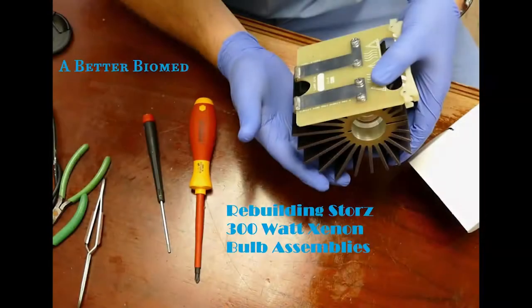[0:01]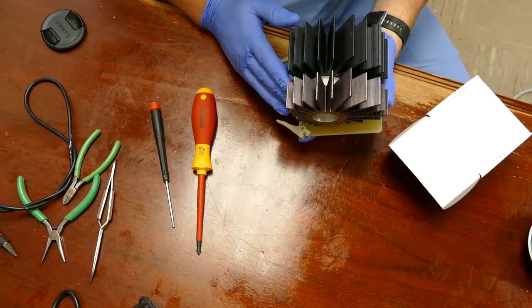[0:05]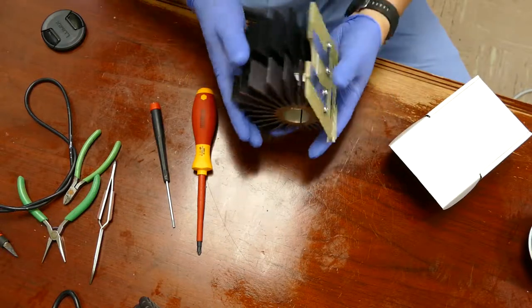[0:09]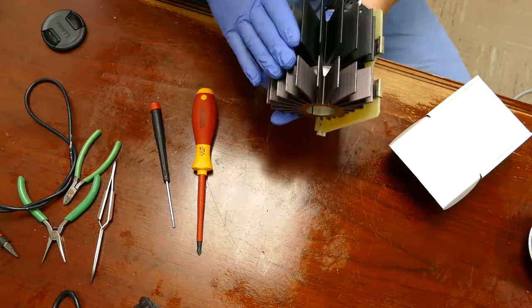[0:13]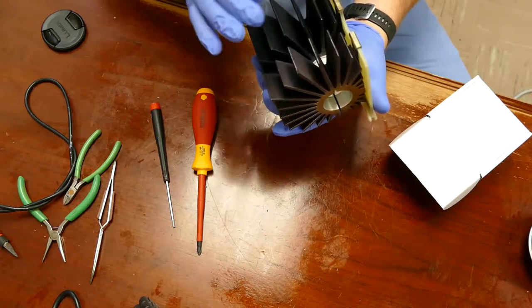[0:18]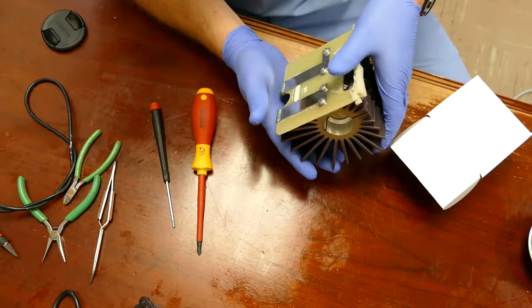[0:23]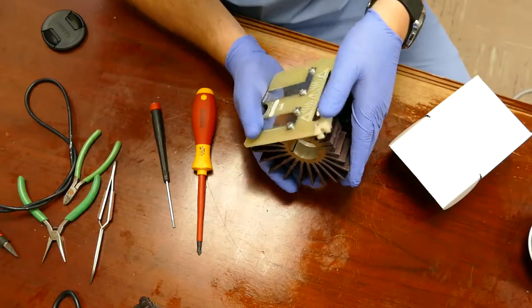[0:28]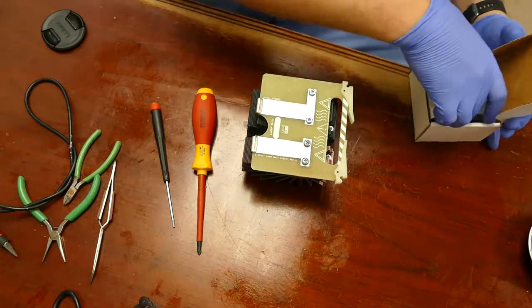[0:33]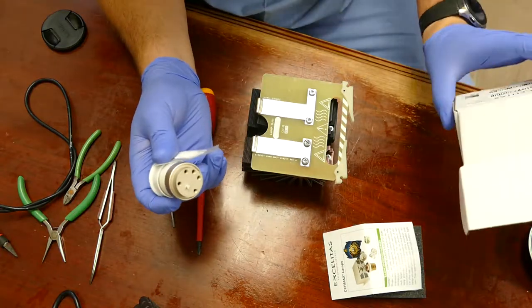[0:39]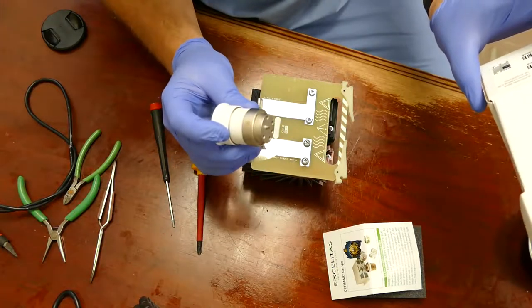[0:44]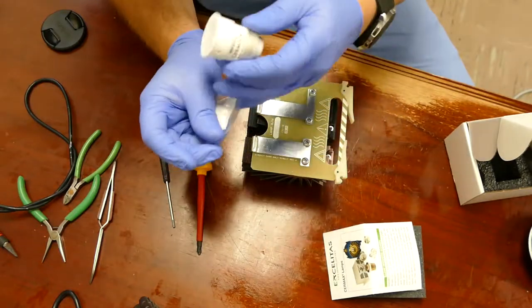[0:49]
Here you can see the bulb holder. Some hospitals tend to just ship these out to Karl Storz and buy whole replacement ones, and that's very expensive. That can be well over $1,000 if I remember right, versus just going out and buying the bulb, which you can see here, at I believe it's $220, $250. This is an Excelitas PE300 BFA bulb, and it comes with a little bit of thermal conductivity paste.
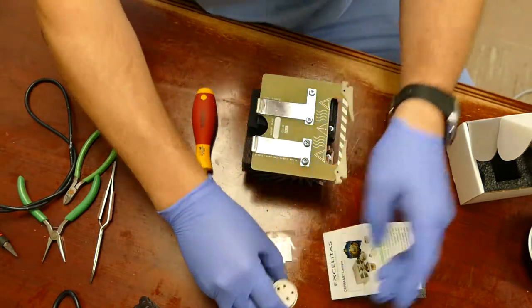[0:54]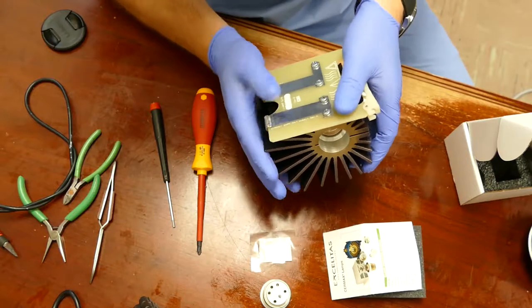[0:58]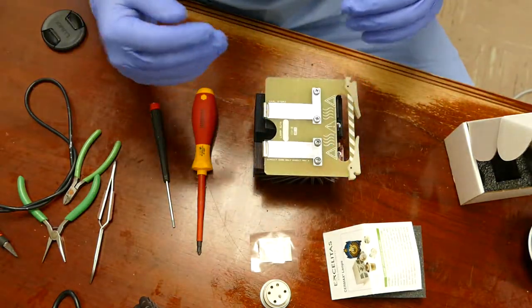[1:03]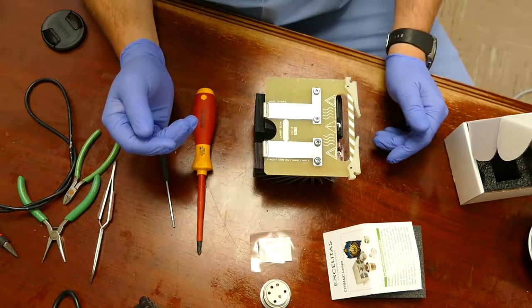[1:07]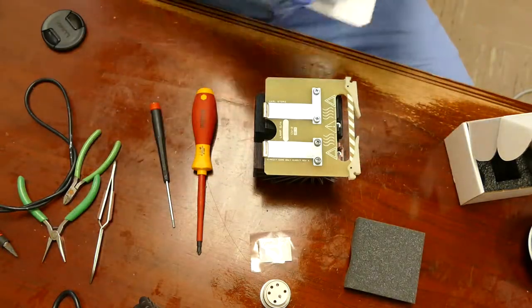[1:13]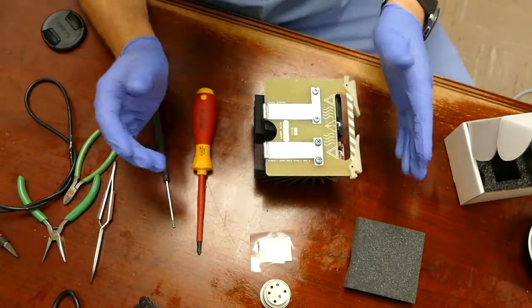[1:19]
So we rebuild them, and most hospitals I believe do, but I often see people doing them wrong or making a complete mess, and that's why I'm making this video, because I'd like to try and get the record straight on how to rebuild these bulbs. So you can see some of the support documentation for the bulb. We're just going to throw that aside because it doesn't matter.
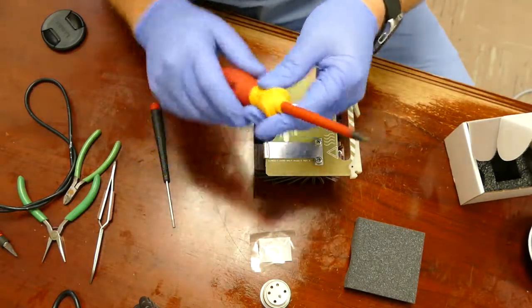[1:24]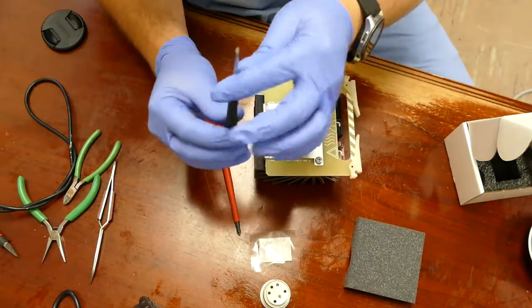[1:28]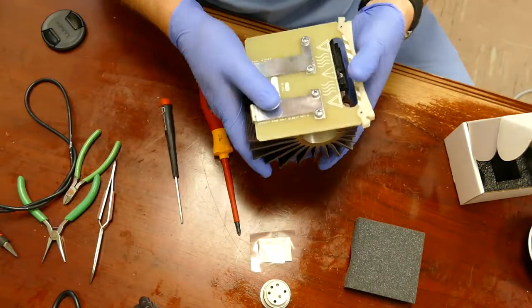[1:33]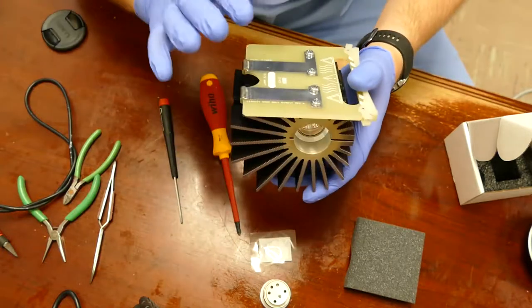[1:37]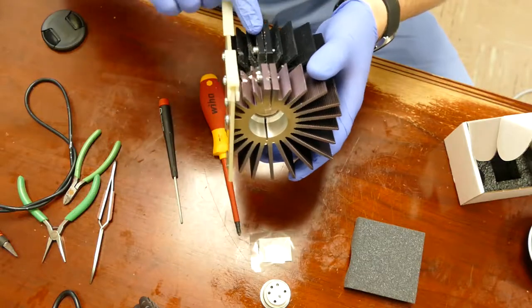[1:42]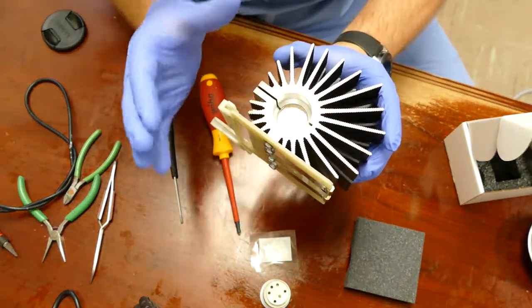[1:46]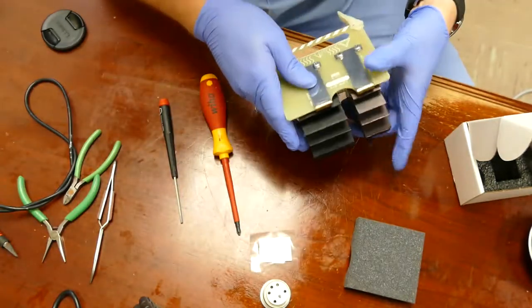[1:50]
What you will need is a Phillips number 2 screwdriver and a 7/64 Allen. There's four Phillips screws that hold the interface card to the heatsink, and then there are two Phillips screws that are the clamping force that retain the bulb. So the first thing that we're going to do is take off the card.
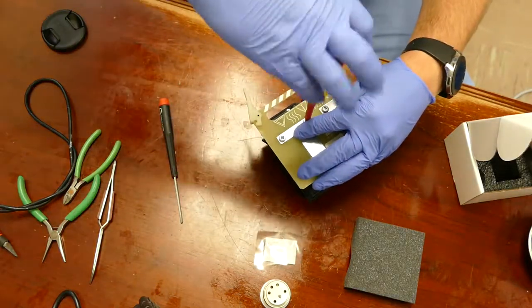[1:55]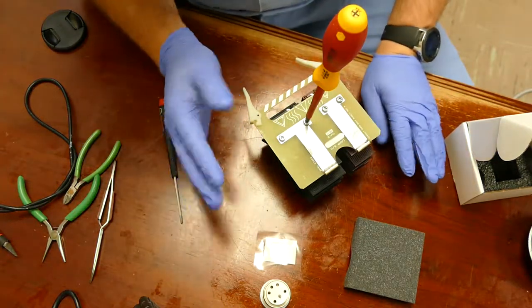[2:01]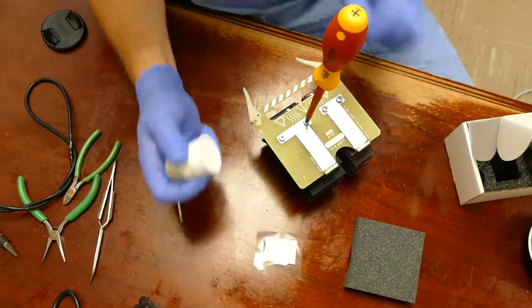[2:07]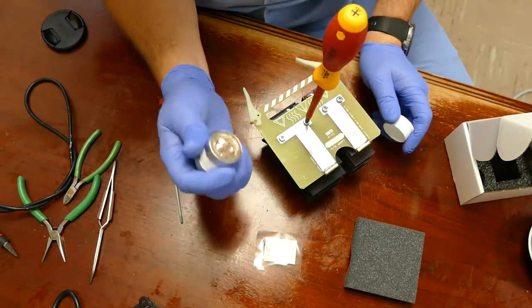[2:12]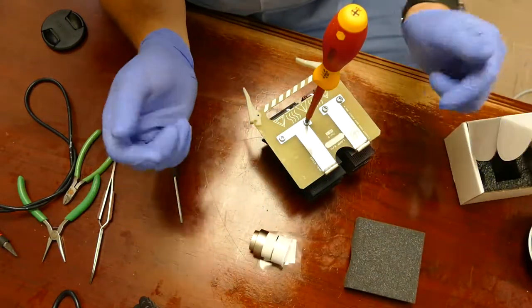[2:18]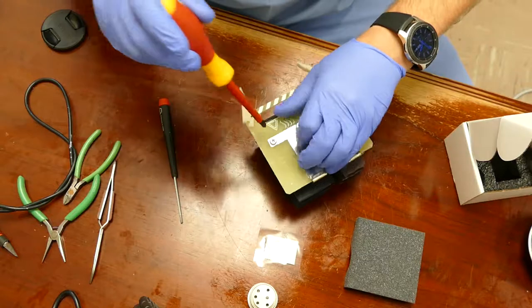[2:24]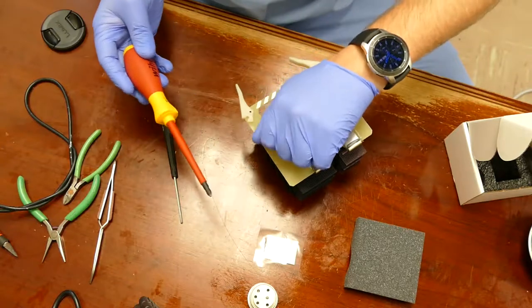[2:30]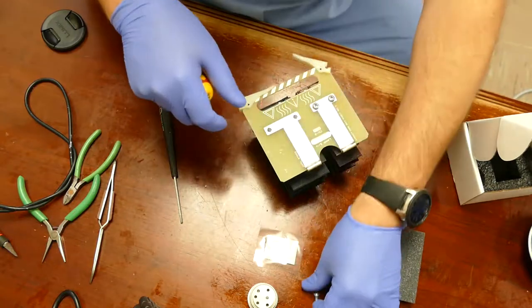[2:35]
Oh, by the way, you can see that I'm wearing gloves. Please wear gloves, not just because this is a mess and this is the easiest way to clean it up, but when you're handling bulbs, oils from the skin will destroy the face of a bulb. It'll create a hot spot. So always use nitrile gloves when you're handling bulbs. I'm going to finish taking off the card. You know I'm not using power tools. The vibrations caused by power tools can also destroy the bulb.
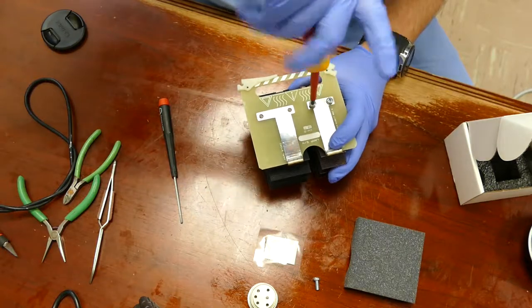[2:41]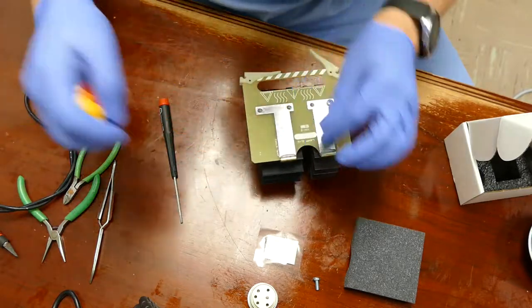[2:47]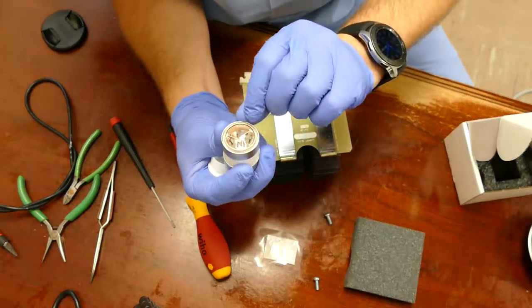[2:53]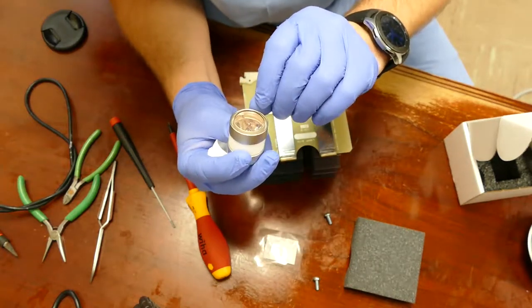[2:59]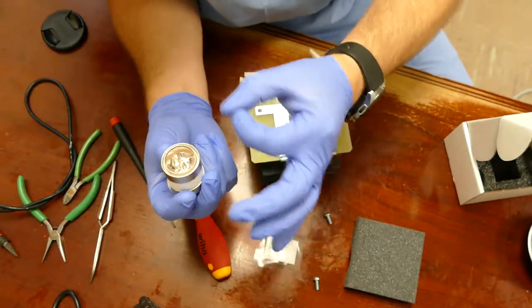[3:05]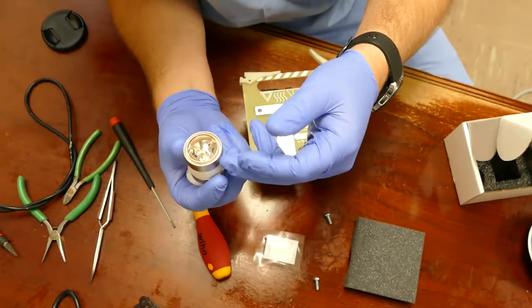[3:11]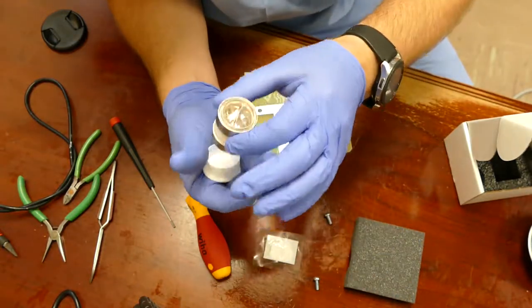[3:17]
These are arc lamps, and what that means is that there is no filament. It's an electronic arc across a pressurized gas. And you can see the anode and cathode right there. There is no visible spot on a new bulb, barely any, and that's just from testing. But on an expired bulb, as you'll see on this guy, there will be a sunspot or a burn spot, and sometimes even browning on the reflector. And the browning is where the arc is starting to arc over inside the lamp. And that's very bad. It'll basically cause the bulb to eventually self-destruct.
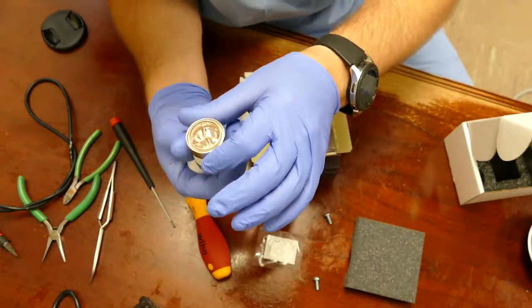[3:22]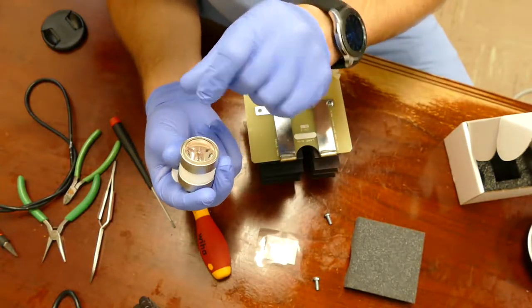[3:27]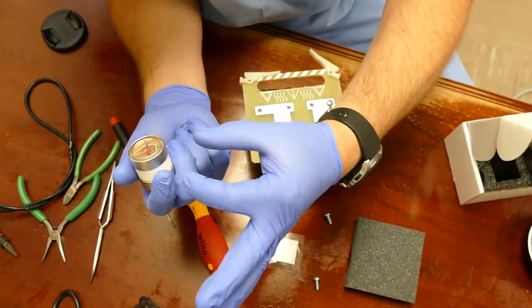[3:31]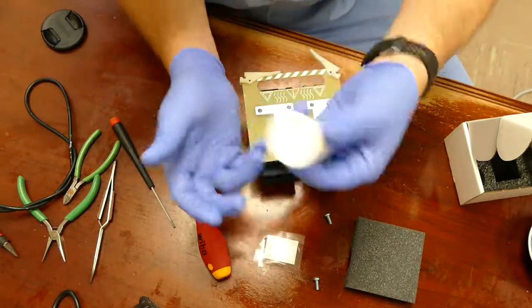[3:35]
So on a bulb, if you're looking to see if it's new or not, just take a look down at where the anode and cathode gap is, and you will see a large black spot. And that means that it's a spent bulb. It's used, at least. So here's my brand new bulb.
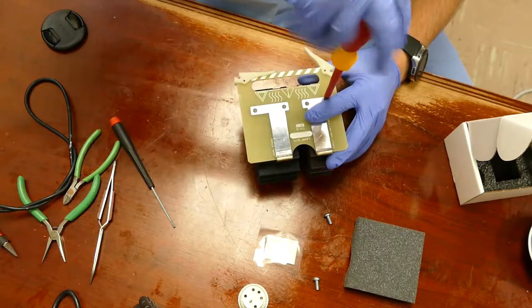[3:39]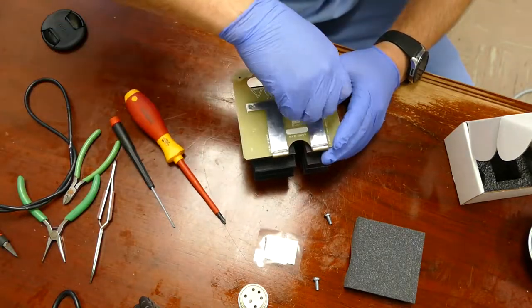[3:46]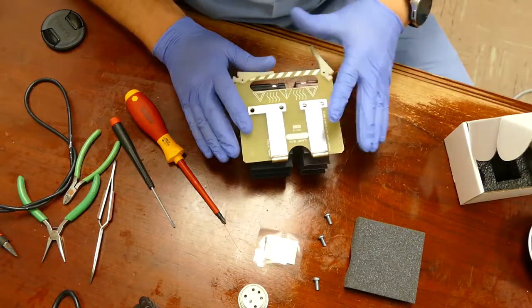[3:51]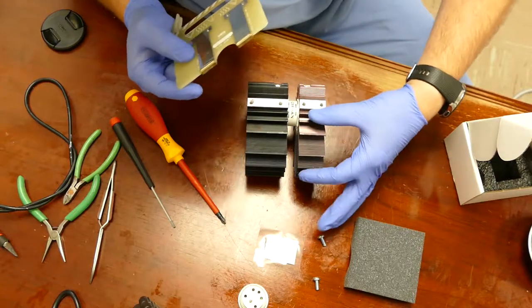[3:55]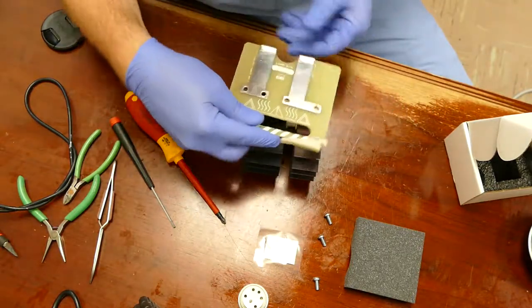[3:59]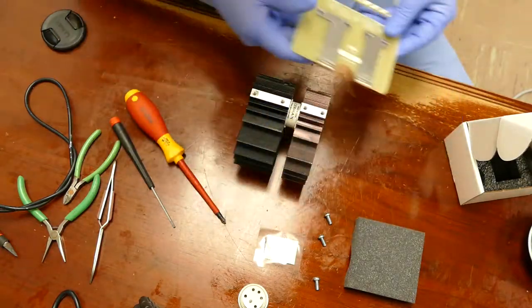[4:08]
Finish removing the card. Now, I want you to take notice that the card interface right here and right here goes over the fat portion of the heatsink, because I have seen people install this guy backwards, and it's just, don't do it. So, it goes over the fat portion of the heatsink. I'm going to take the card and put it off to the side.
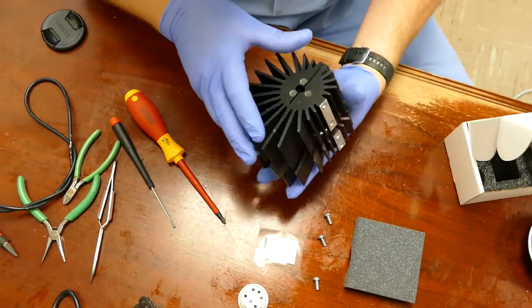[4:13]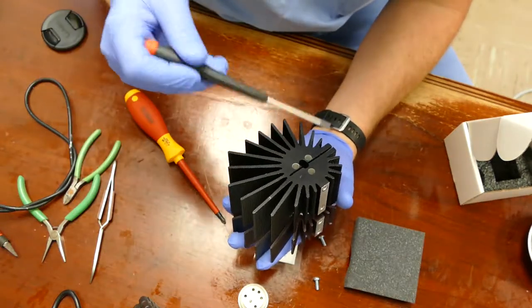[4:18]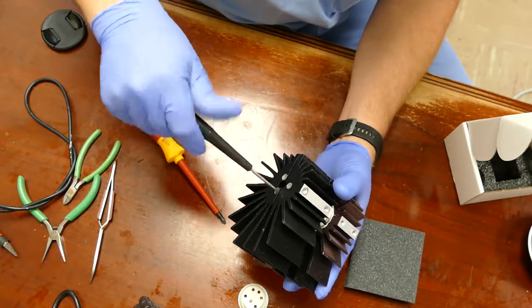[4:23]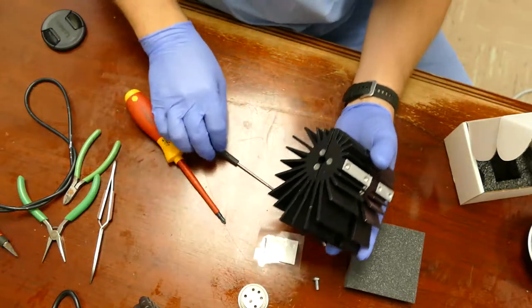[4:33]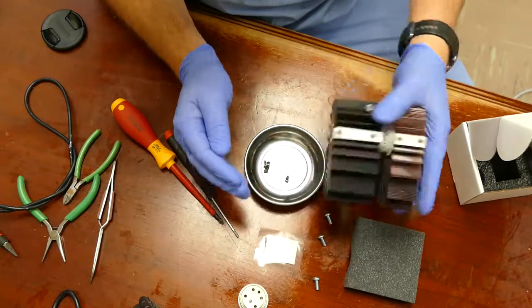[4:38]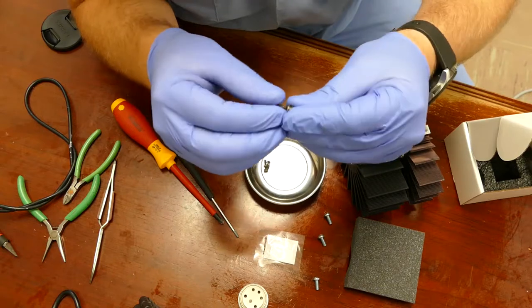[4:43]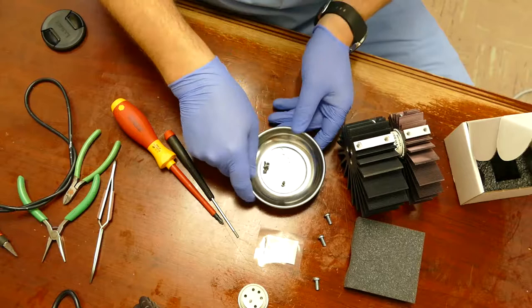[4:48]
Here you can see my two heatsinks. I've got three little screws down here, that's the 7/64. I'm going to go ahead and remove those now. And I'm going to dump those into a little tray, because as you see, there's more than just the screws in there. There's a tiny little lock ring. So you want to make sure that you retain those rings. That's why I dump them onto a dish.
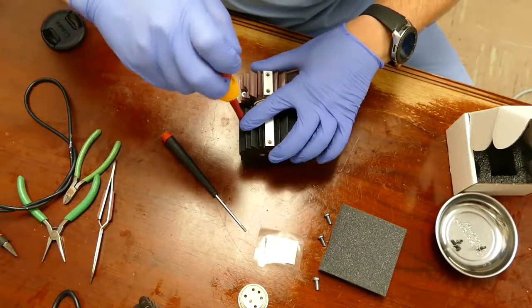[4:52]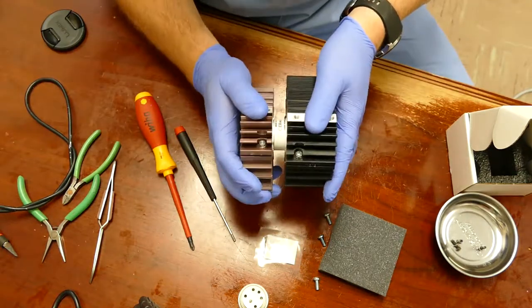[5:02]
The next thing is to loosen up the clamping screws. Here and here. And now you can just give the heat sinks a twist and it'll separate.
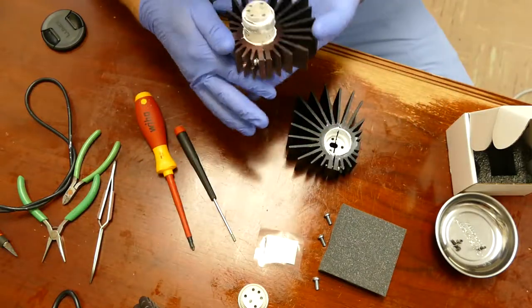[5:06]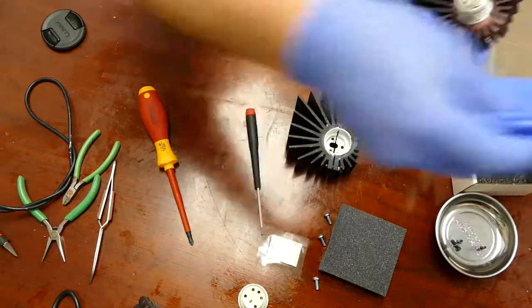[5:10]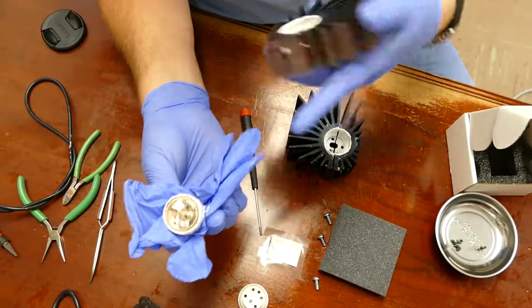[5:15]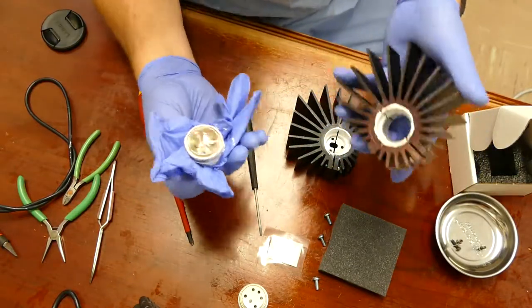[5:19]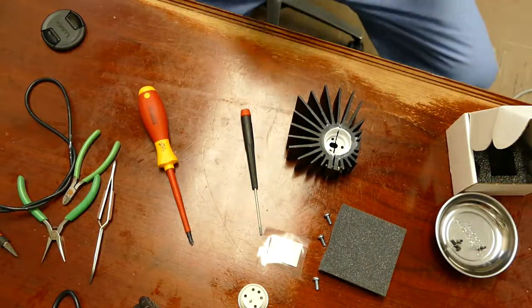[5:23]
I'm going to use my extra glove to grab onto this bulb. So here's the bulb. Beware of the white paste. It gets on everything. So that's why I'm using this glove as a disposable. And I'm just going to go and throw that bulb straight in the trash.
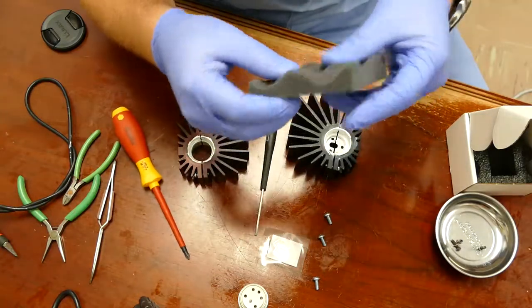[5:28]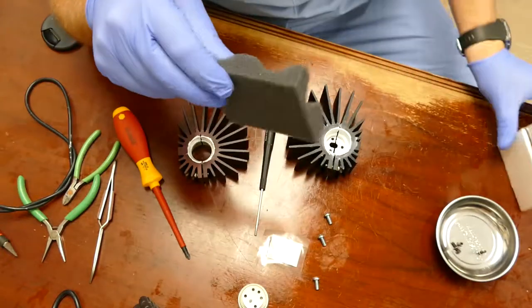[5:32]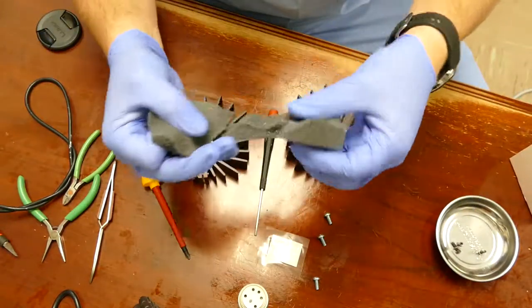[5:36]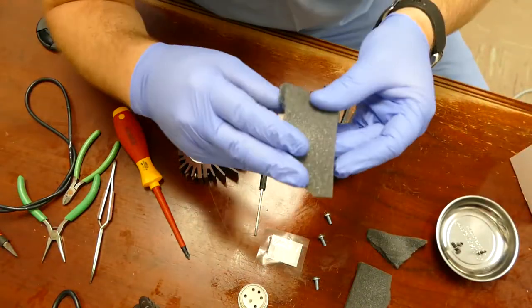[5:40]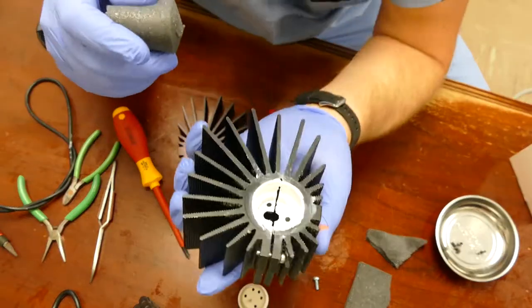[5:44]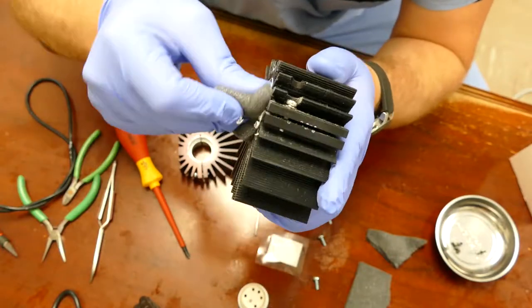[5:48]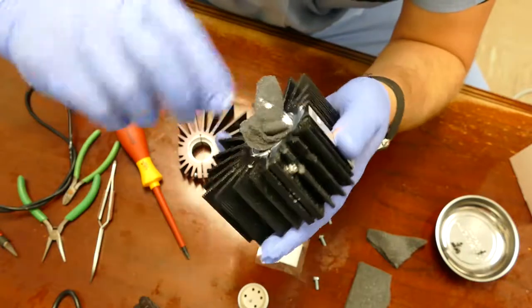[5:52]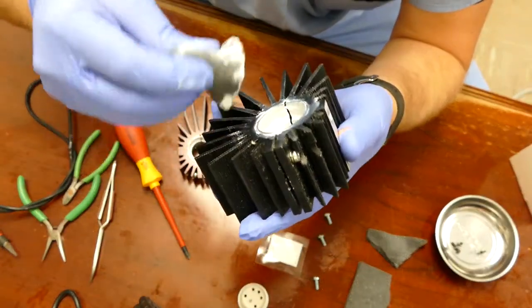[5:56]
Now the next thing you need to do is with your new bulb, there's going to be some packing foam. I want you to take that foam and rip it in two. All right? So once you have the foam ripped in pieces, you can take that foam and use it to clean out the heat sink. You can take it and stick it down in there. Give it a spin, and it will clean out all that extra paste.
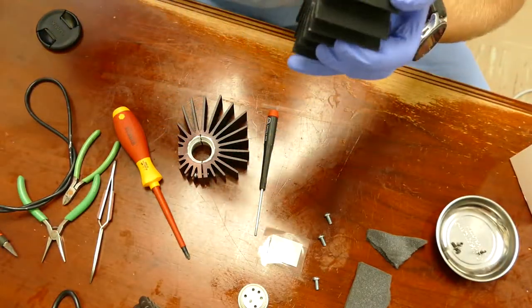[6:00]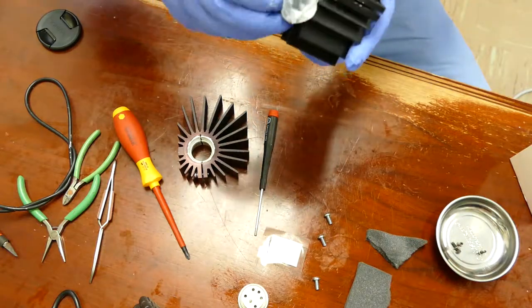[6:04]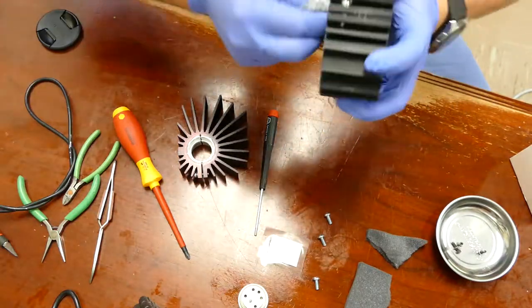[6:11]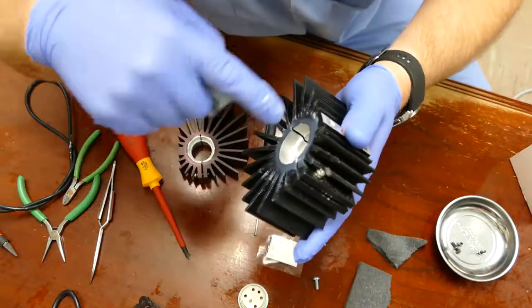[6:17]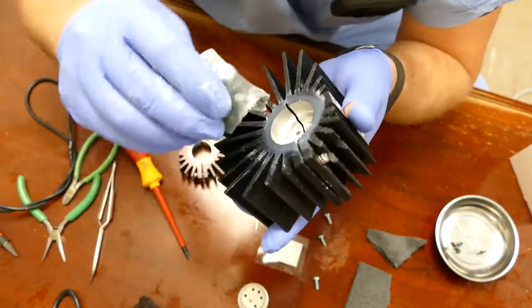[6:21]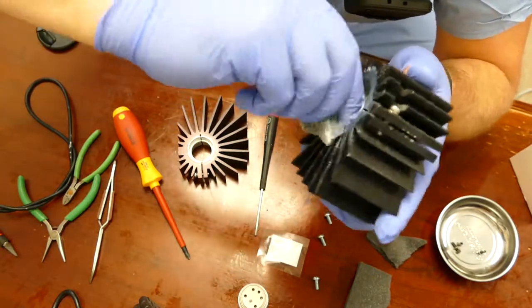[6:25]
You can tell whoever rebuilt this bulb used an abundant amount of that paste. It is everywhere. But because the foam can conform to the lands and grooves down inside this heat sink, it's an excellent source for cleaning those out. That nice clean cavity for the new bulb.
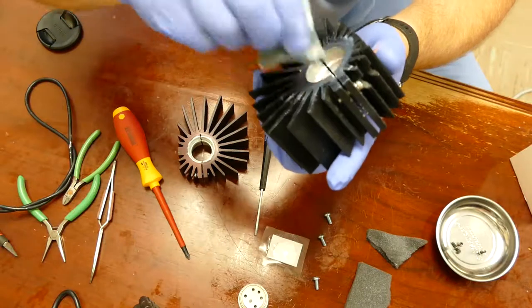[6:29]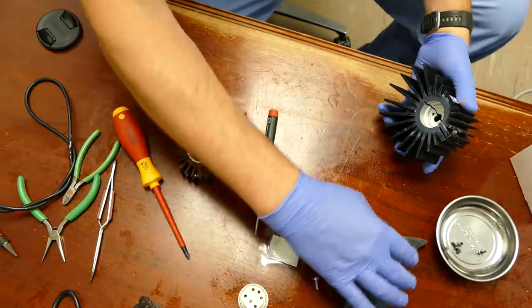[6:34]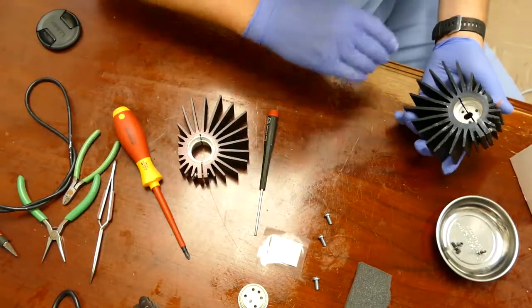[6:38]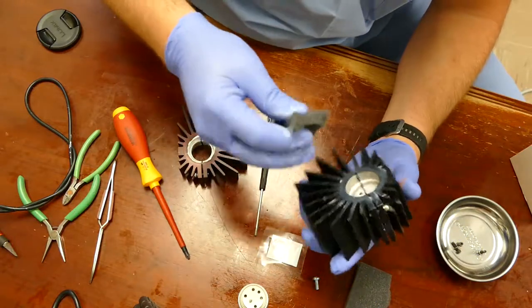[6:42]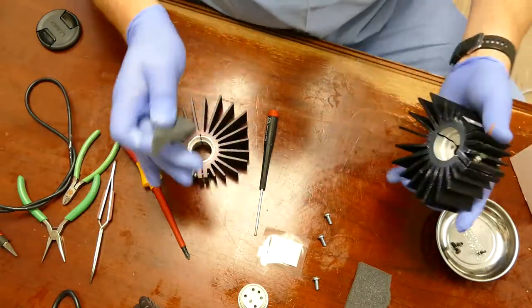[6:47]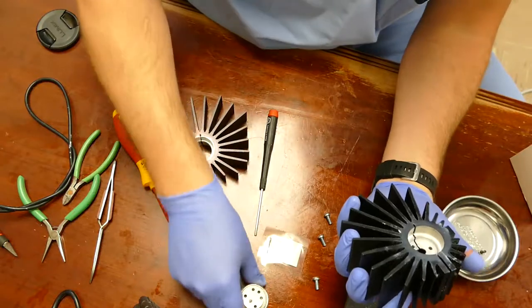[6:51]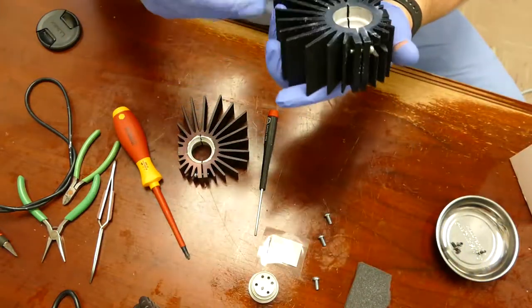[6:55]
Make sure you throw that foam away. Don't leave it on your desktop. When this white garbage gets on something, it makes an absolute mess. So try and maintain a clean work environment, because you don't want to get this stuff on the face of that bulb. These bulbs are about $220, so try and be nice to it. All right.
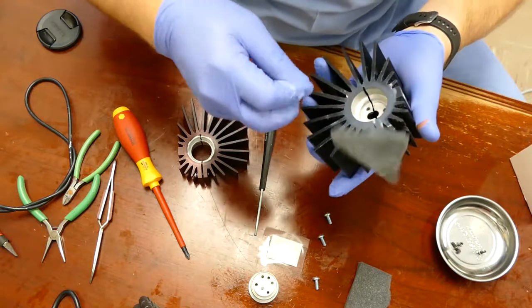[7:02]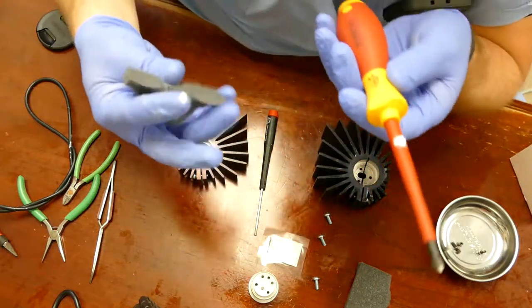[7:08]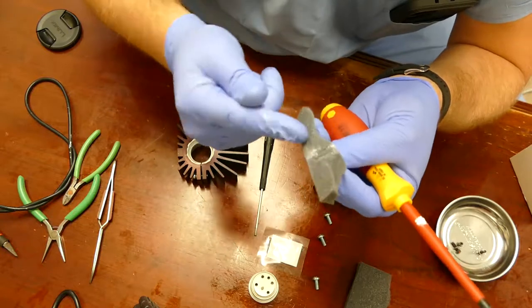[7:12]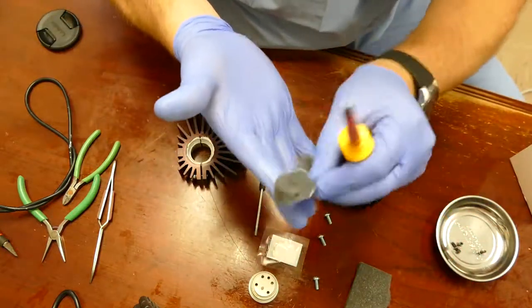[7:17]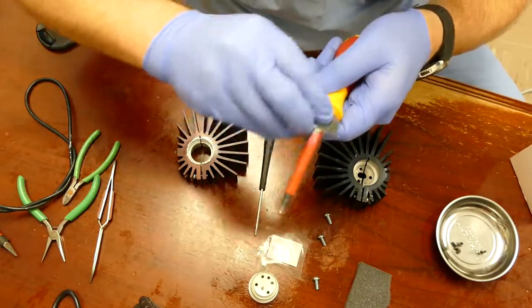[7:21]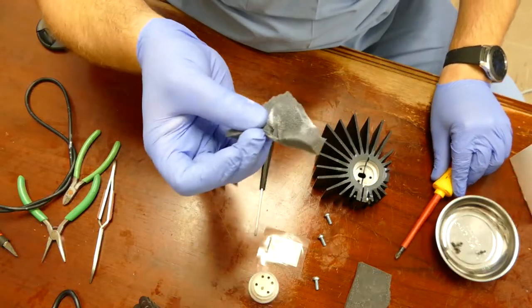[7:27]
So if you happen to get some of the white goo on some of your tools, or even on your gloves, you don't have to change out your gloves. Just take the foam and rub it on your glove. And it's like a magnet for this white goo. See that? Cleans it right up. Keeps it on the foam.
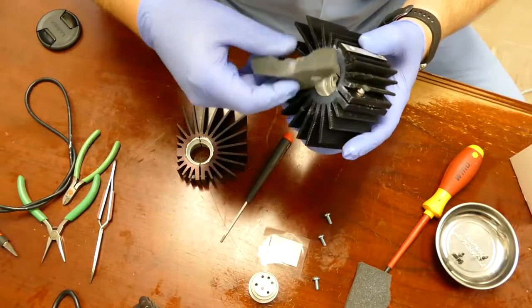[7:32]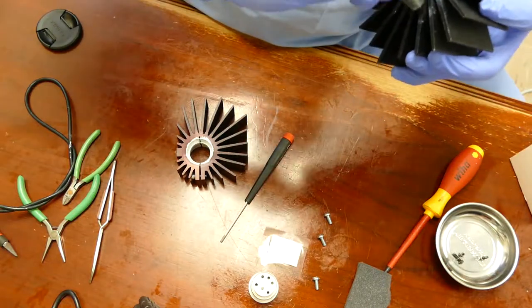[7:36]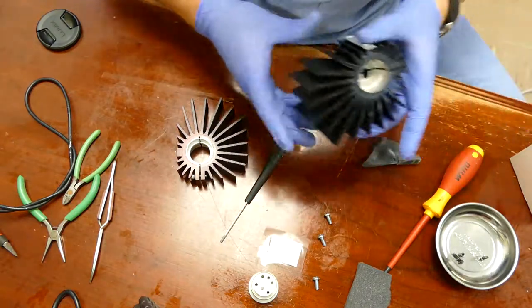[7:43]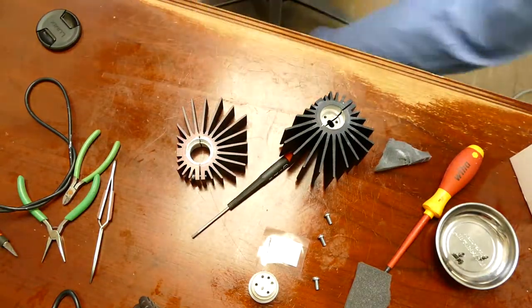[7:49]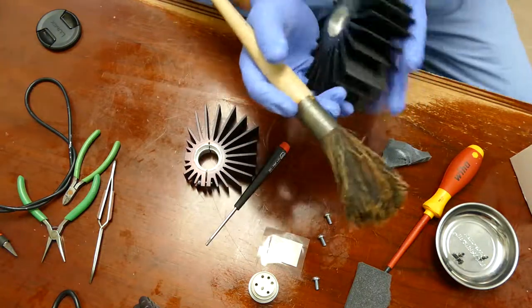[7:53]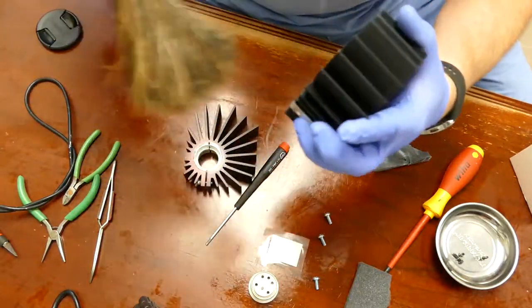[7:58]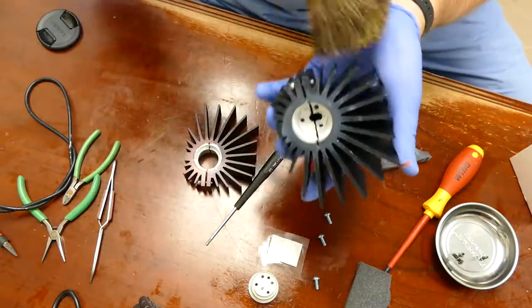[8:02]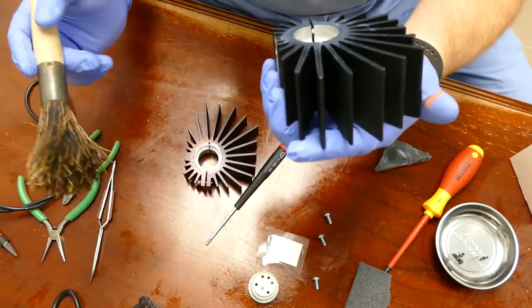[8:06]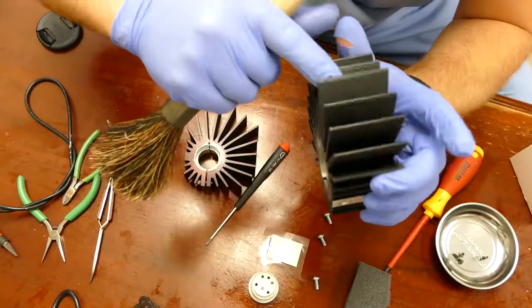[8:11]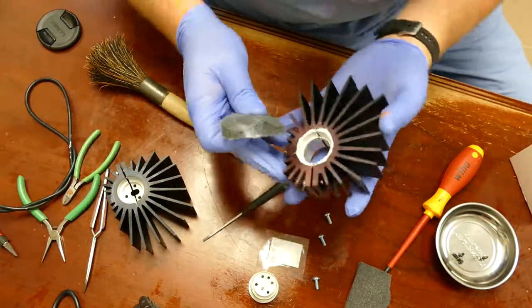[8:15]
So this housing here looks like it's pretty clean. Clean enough for what I'm doing anyway. Next, you want to take a brush if there's any sort of lint on these fins. I believe there is on mine. So I keep a brush like this one. And just brush them off. Clean those fins out. It's a lot of debris that gathers up on heat sinks. There we go, nice and clean. Okay, so the cavity's nice and clean aluminum. The outsides are clean. I'm gonna set this one off to the side and do the next one.
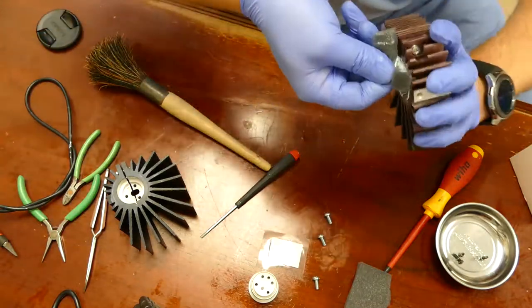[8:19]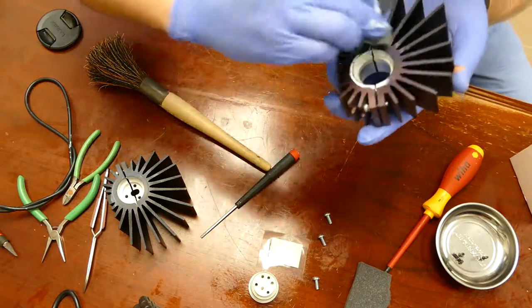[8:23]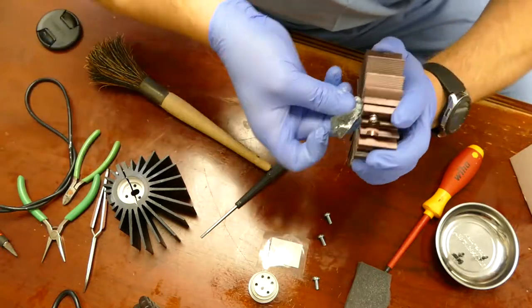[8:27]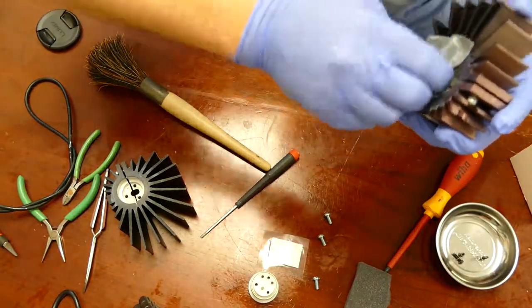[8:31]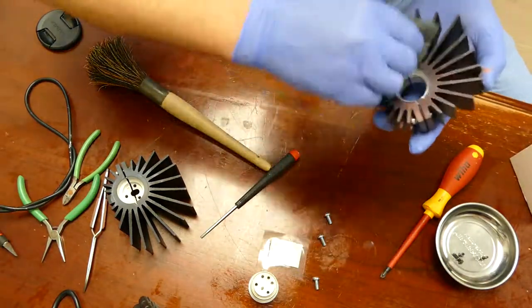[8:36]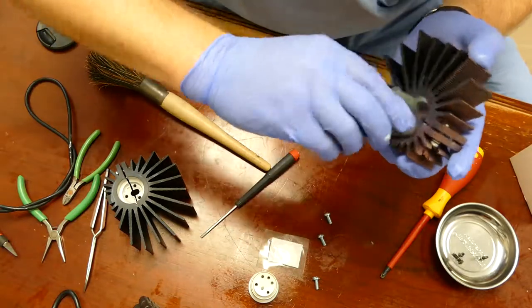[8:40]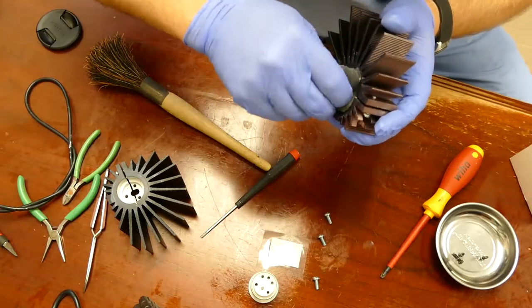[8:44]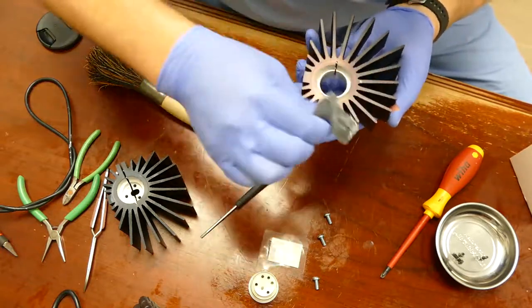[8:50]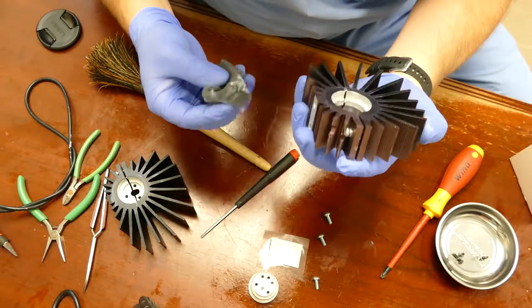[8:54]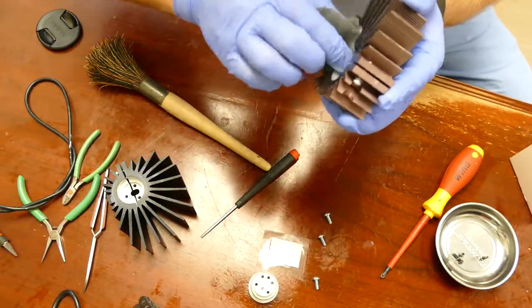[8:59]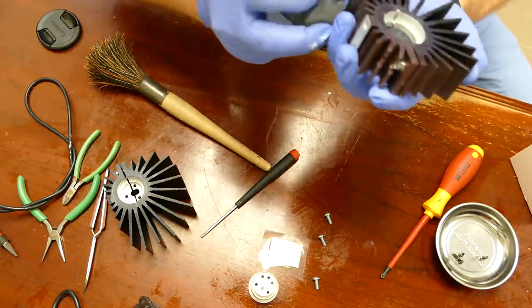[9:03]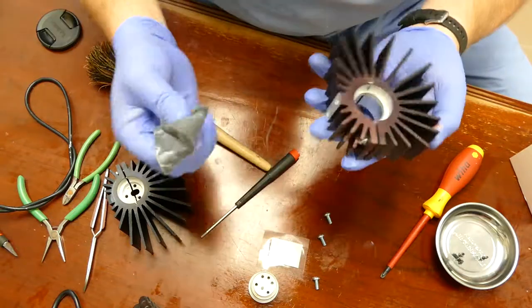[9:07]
You can see how well that foam just cleans up all that thermal compound. It does a really nice job. Nice, smooth, even swipes. You'll clean it right out. There you go. Okay, there we go. You can see that this one's clean as well. Oop, got a little bit more down on this side. Gotta check it very thoroughly. Okay. All right, that's clean.
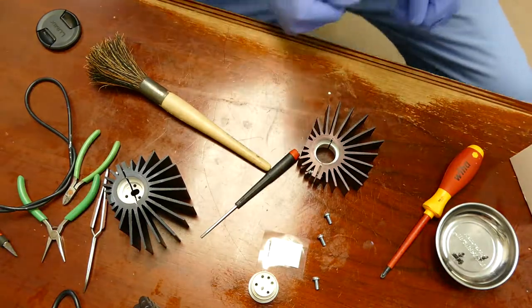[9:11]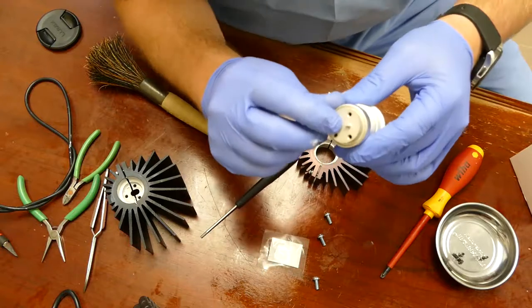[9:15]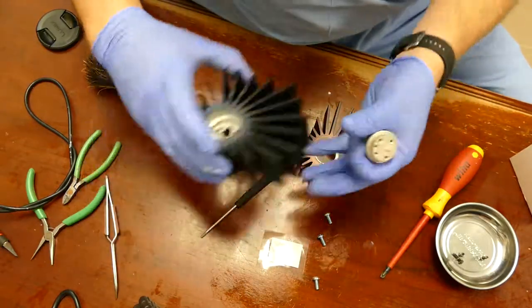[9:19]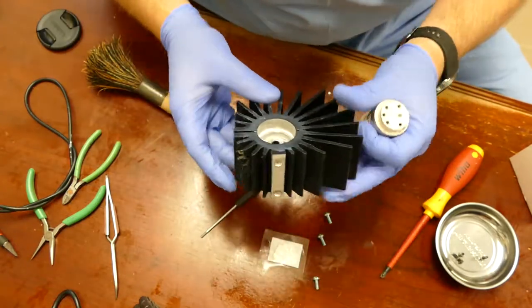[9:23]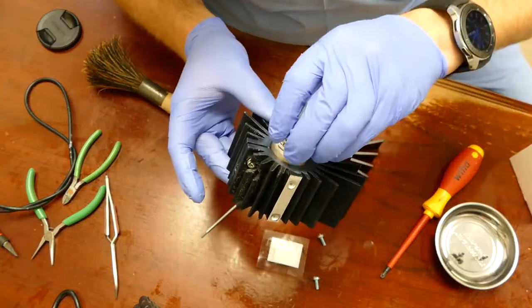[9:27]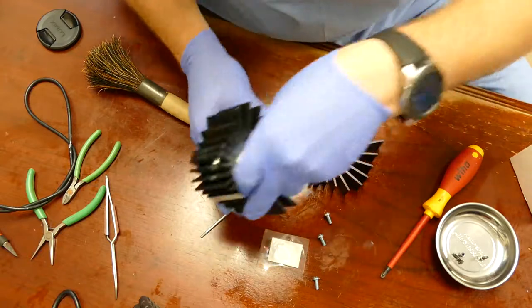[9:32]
All right, next we're gonna take the bulb, and there's a little nodule, that's where they actually pressurize it with the air. And that is gonna correlate with the gap that's in the back of the heatsink. So you're gonna align it so that nodule is in the bottom. Guesstimate where its alignment's gonna be. I'm gonna lay it right here.
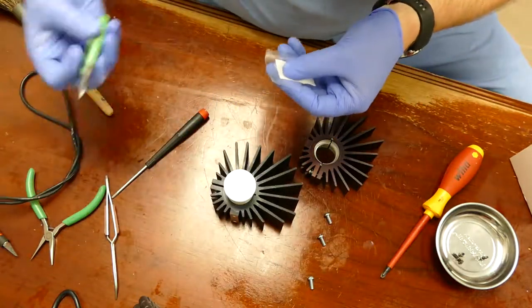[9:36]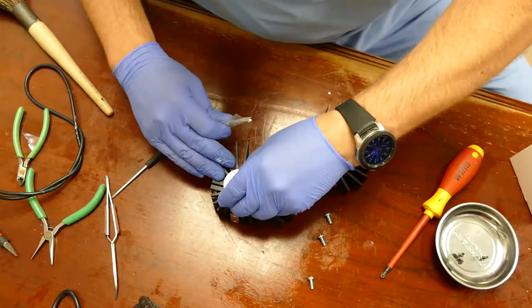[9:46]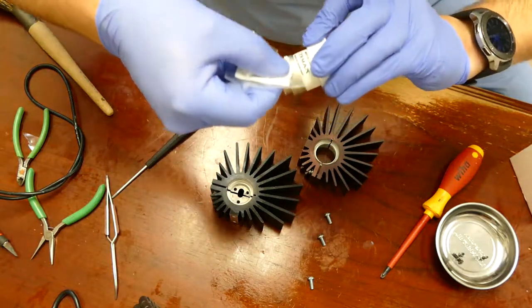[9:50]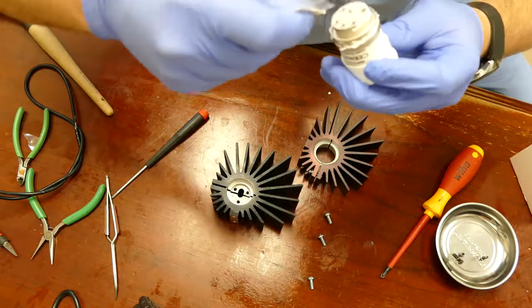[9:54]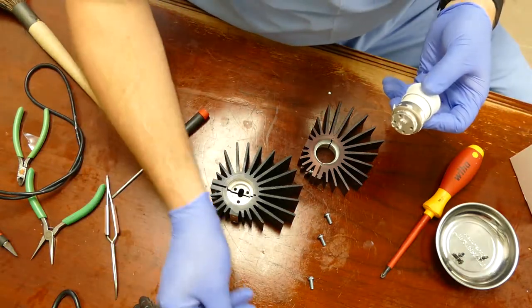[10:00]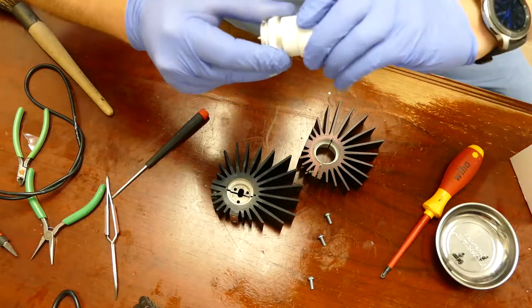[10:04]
Okay. I just opened up the corner on this thermal compound, so a little bit's coming out. All right, I'm gonna put a couple dabs of this thermal compound around the bottom and on the sides. And here's the secret. Is you take your gloved hand and just spin the bulb, and it creates a nice, uniform, even layer of thermal compound.
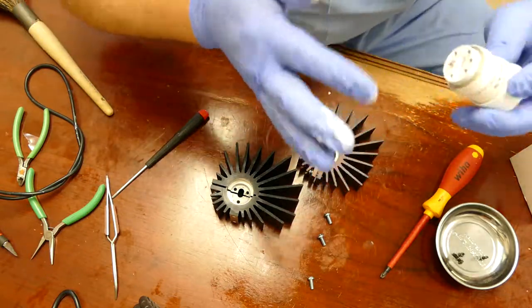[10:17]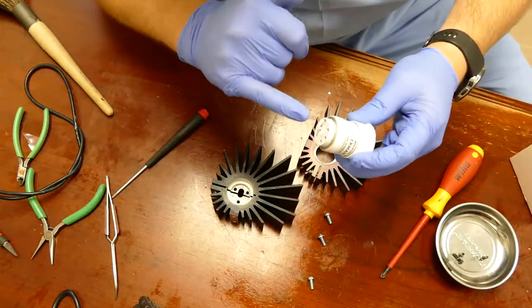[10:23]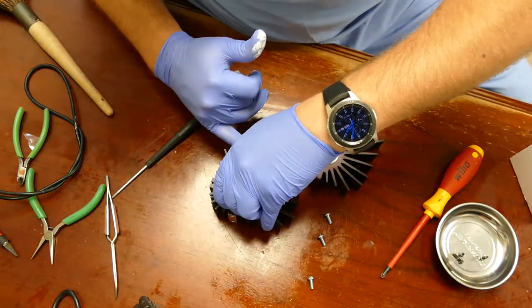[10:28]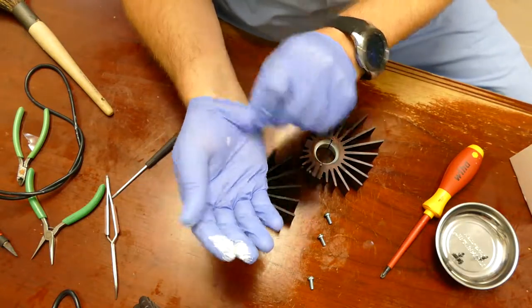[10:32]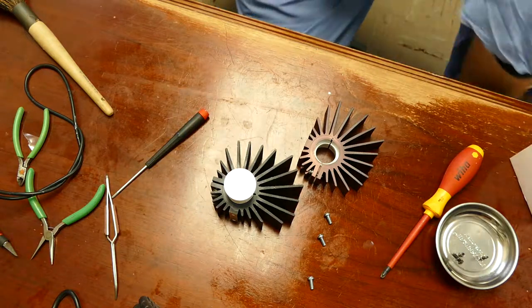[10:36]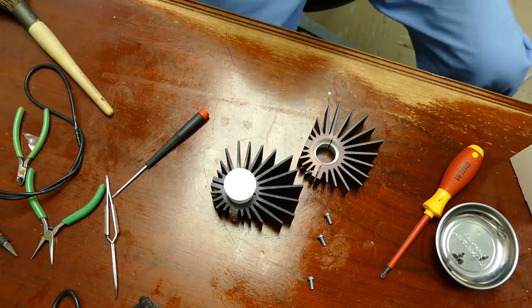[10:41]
You're not making a mess. See that? Because all you're trying to do with the thermal compound is create an interface between two materials. So there we go. Nice uniform coating. Make sure that the nodule is aligned properly. Put it in its heat sink. Now you can tell I got a dirty glove, so I'm going to pop that one off, because you don't want to touch the bulb after you dirtied up one of your gloves. And I'm going to install a new glove.
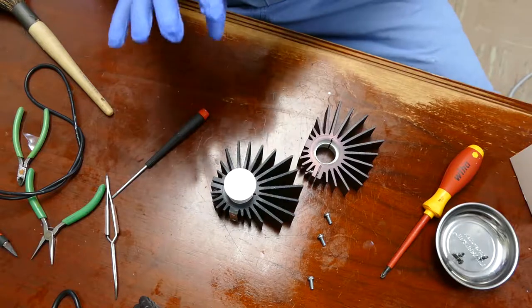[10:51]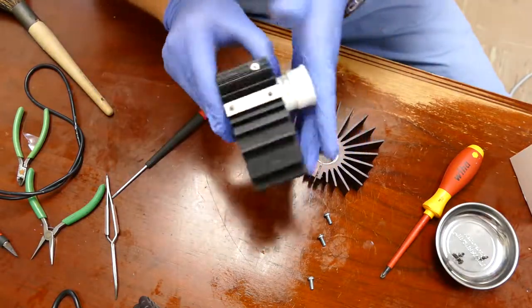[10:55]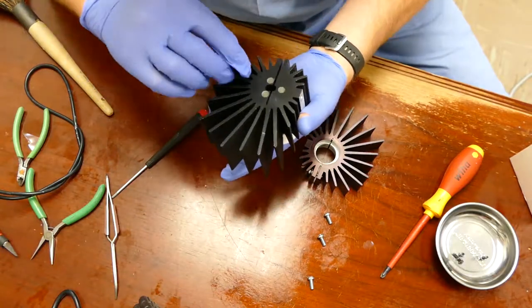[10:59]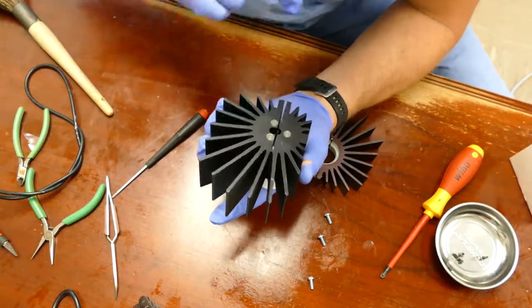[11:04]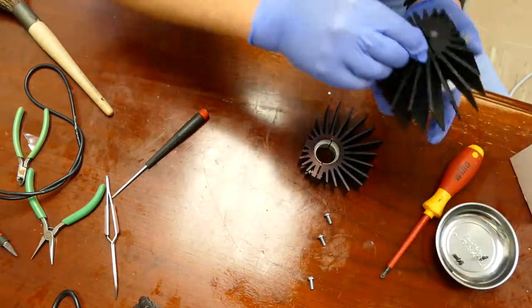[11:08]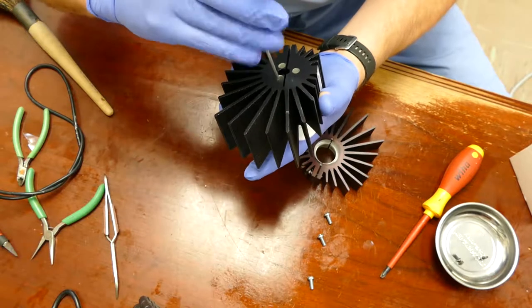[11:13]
Okay. I'm going to flip the heatsink over, rotate the bulb just enough, and you can see how on one side we have two screws and the other side we have one. I'm going to first put in the two screws on the one side. There we go.
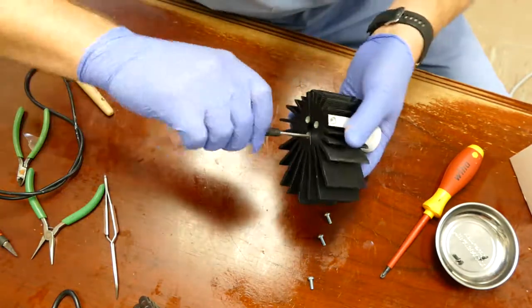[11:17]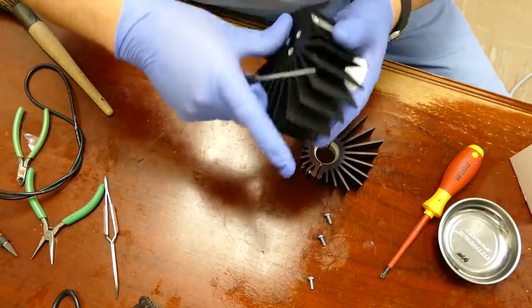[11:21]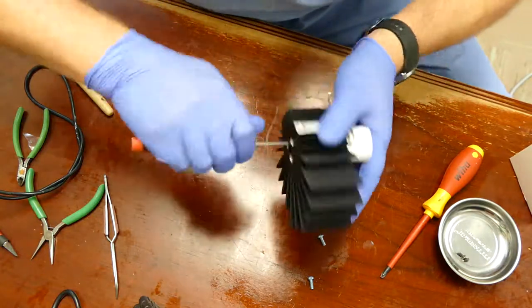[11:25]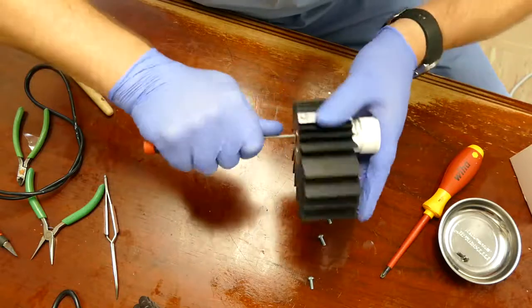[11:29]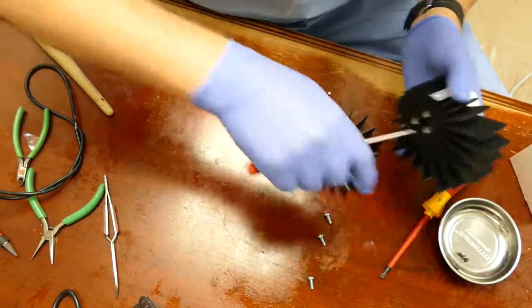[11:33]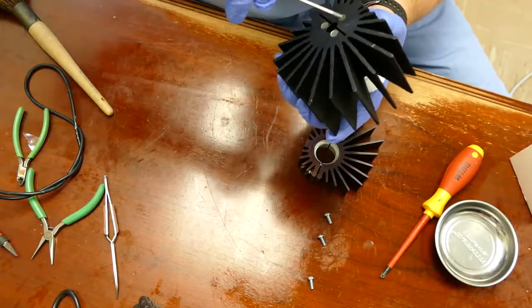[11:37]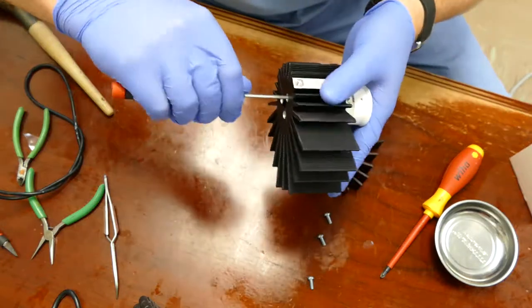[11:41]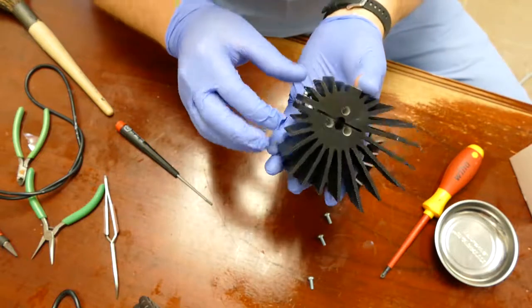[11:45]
Make sure you don't cross thread them. Make sure they go in nice and firm. Okay. And on the third side, I'm just going to get the thread started. I'm not going to tighten it down. I'm just going to get them started. And the reason you don't want to tighten it down is because you're going to clamp these two together.
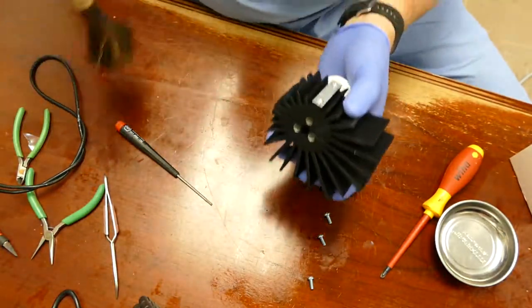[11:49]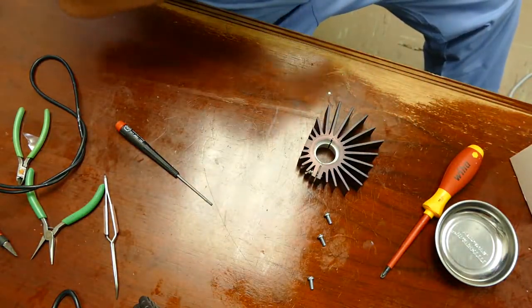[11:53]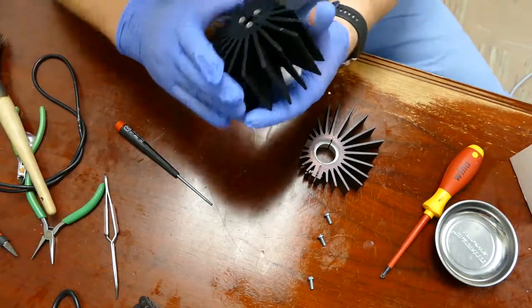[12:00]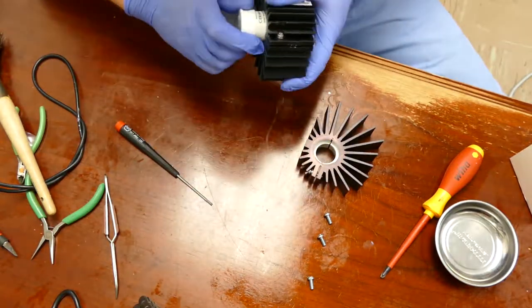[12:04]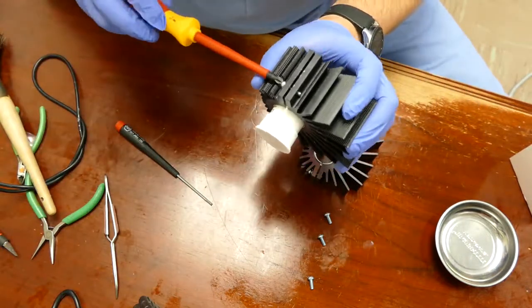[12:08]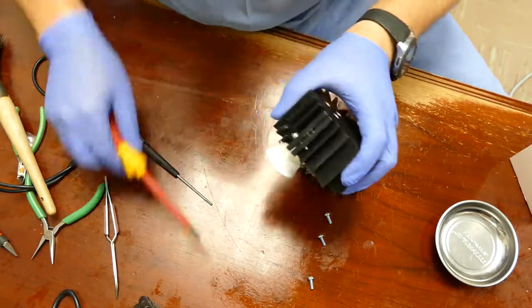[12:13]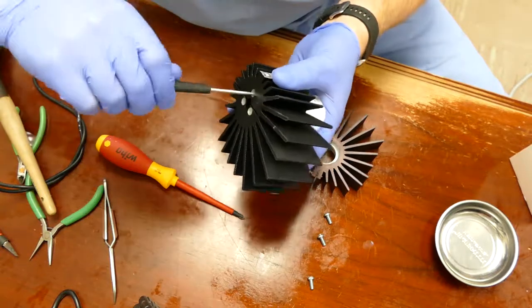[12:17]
Oh, look at that. Got a dirty heat sink there. And clean this one off. Okay. Clean, good. All right. So on this side here, I'm going to tighten down the clamping screw on the first side. There we go. Now I go back and tighten down the third 7/16 screw.
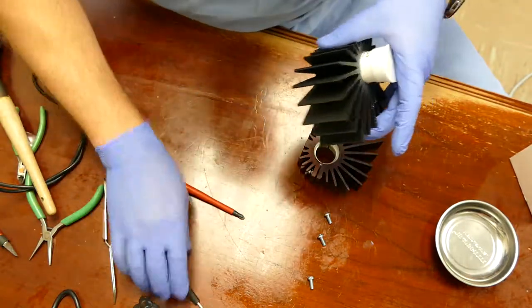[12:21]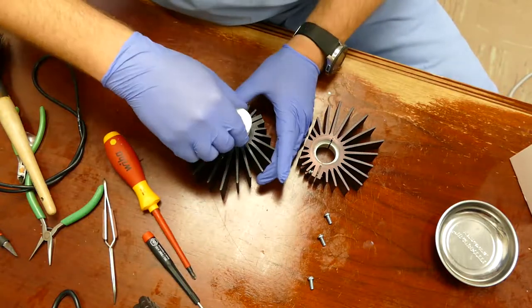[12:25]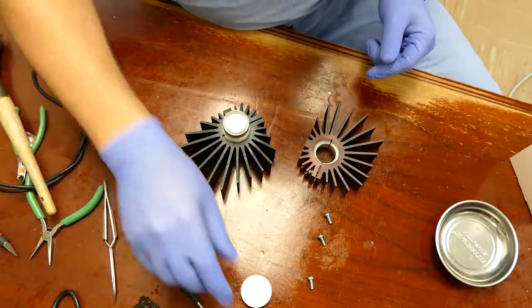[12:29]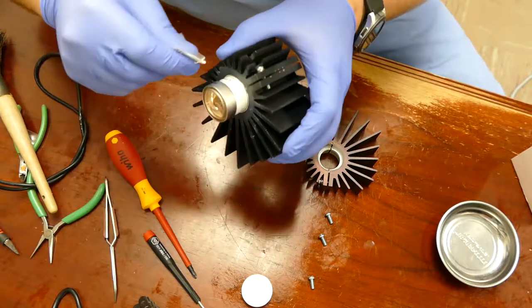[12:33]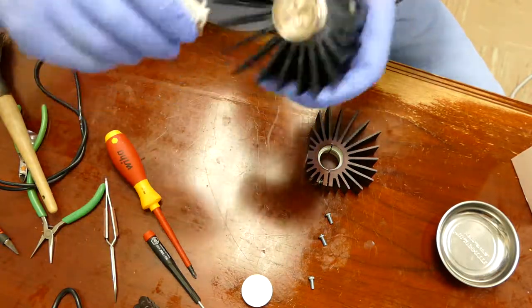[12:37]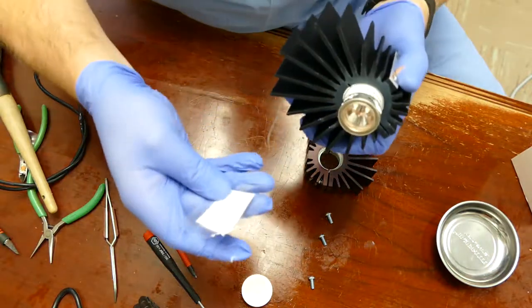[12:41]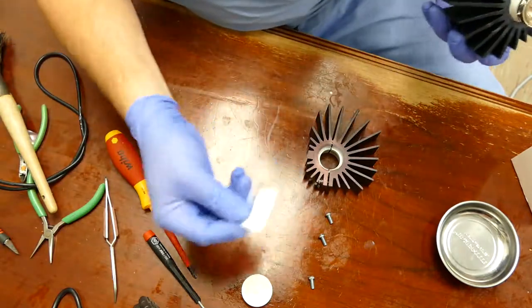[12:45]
There we go. Okay, now that the bulb is in, it's aligned, we're going to take off the cover that's protecting the face of the bulb, and we're going to take a little tiny bit of this thermal compound. Put a couple dabs around the outside. You don't have to use the whole packet. Matter of fact, I only use about a quarter of the packet. Some people just go nuts with this stuff and it doesn't make any sense.
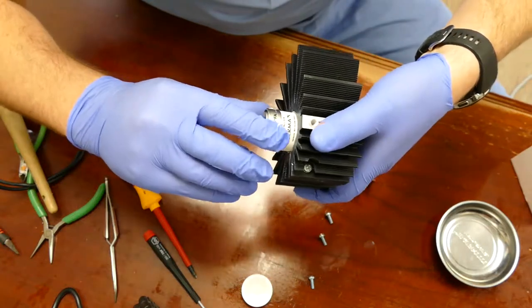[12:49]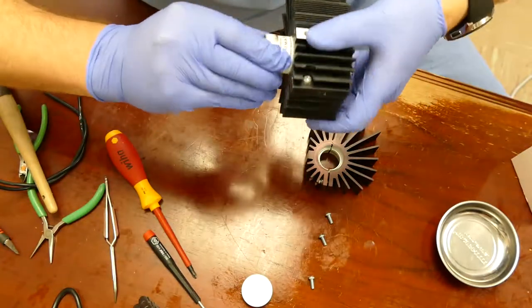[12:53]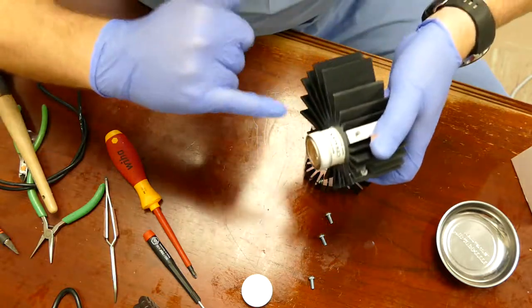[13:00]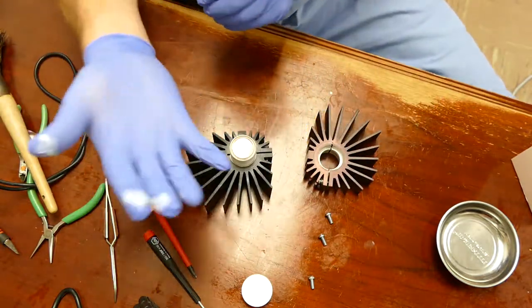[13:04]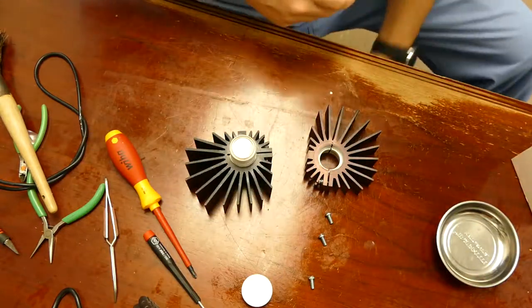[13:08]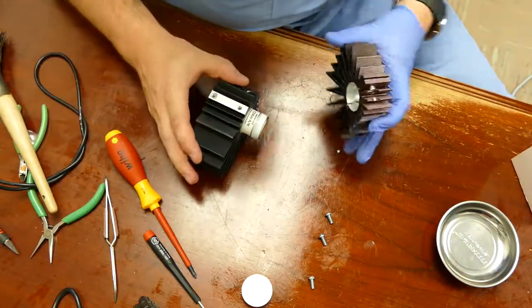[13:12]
So very carefully, what you're going to do is just grip the bulb like you did before and just give it a spin back and forth, creating a uniform coating of thermal compound. And you can see I've got a dirty glove, so I'm going to take that glove off. And now I'm going to align the two heat sinks.
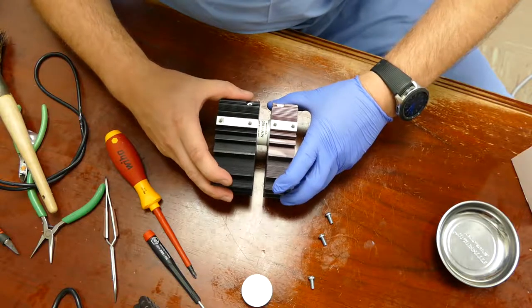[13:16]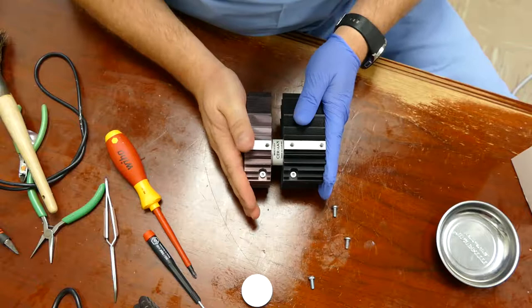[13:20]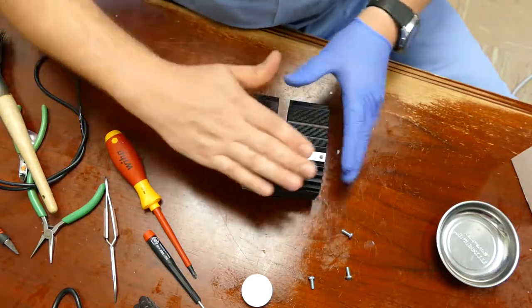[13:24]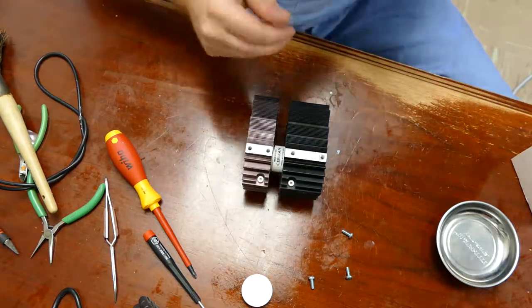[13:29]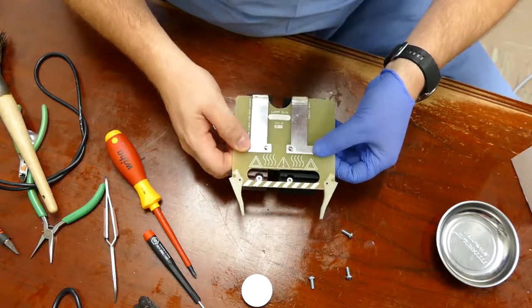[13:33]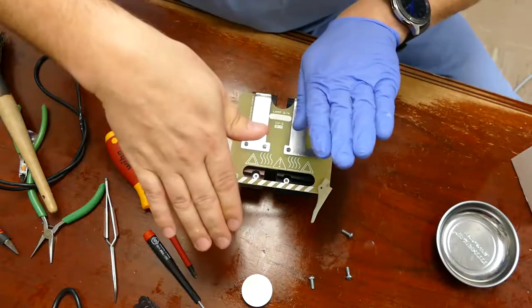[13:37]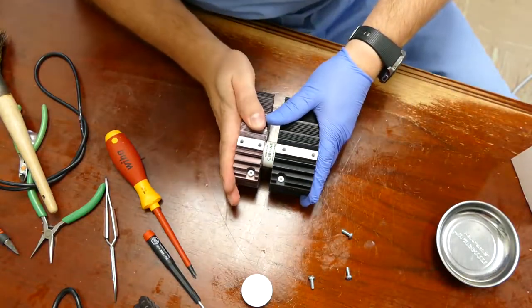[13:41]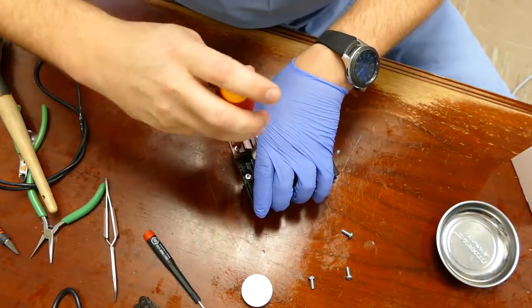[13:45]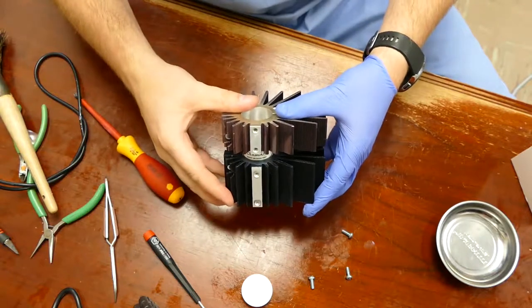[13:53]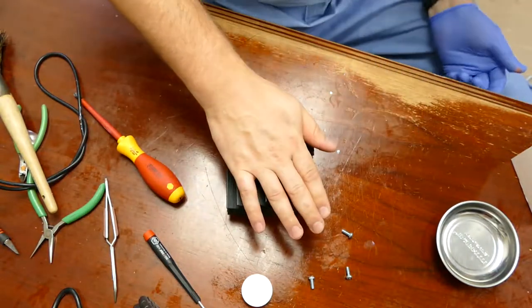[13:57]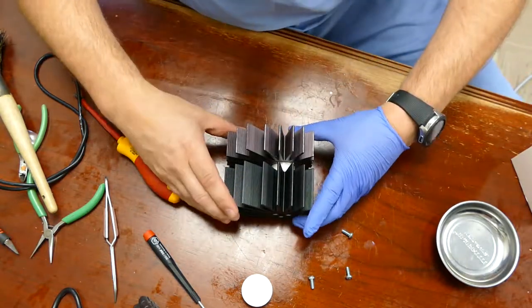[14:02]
So you can see what I'm doing here is I put both heat sinks down on a flat surface and press them together. That way I know that they're planar, which means that the card sits nice and flat. If it's not planar, you'll have one heat sink doing this, one heat sink doing that. So make sure that it's nice and square, and then go ahead and tighten down the other clamping screw. All right, now place it on a flat surface and check it. Make sure that they're sitting flat, and they are. Excellent.
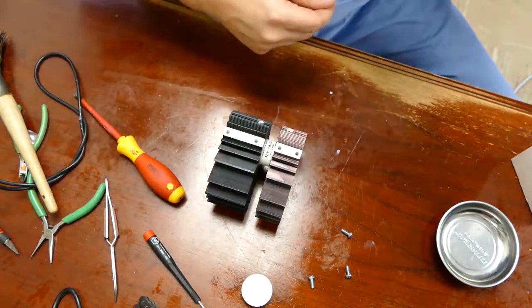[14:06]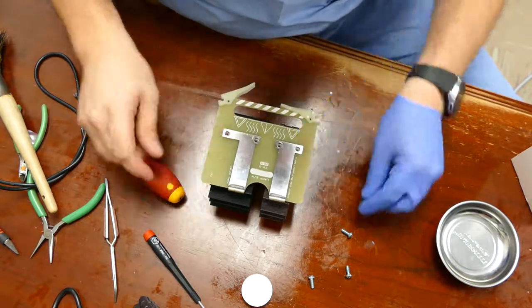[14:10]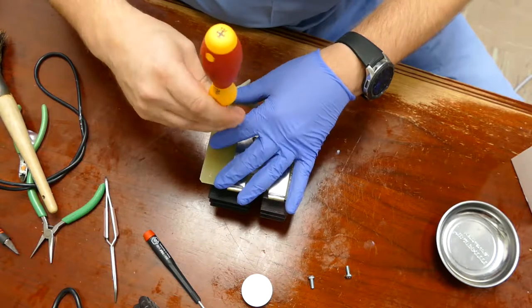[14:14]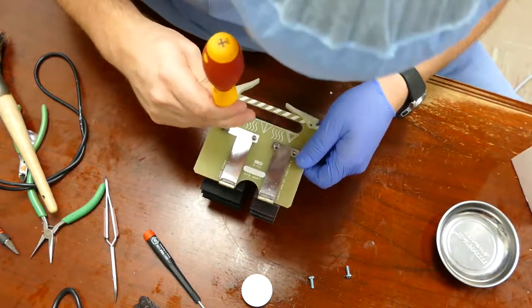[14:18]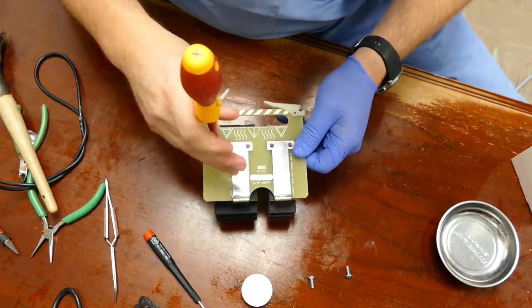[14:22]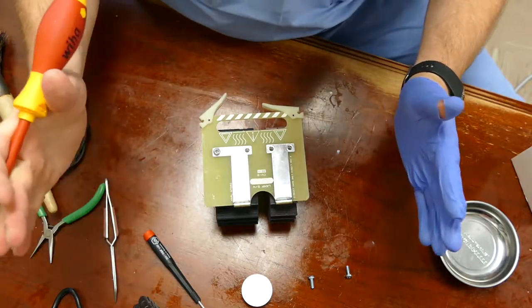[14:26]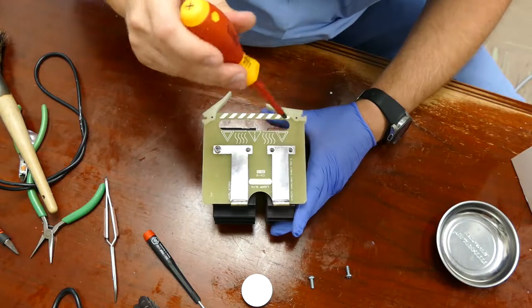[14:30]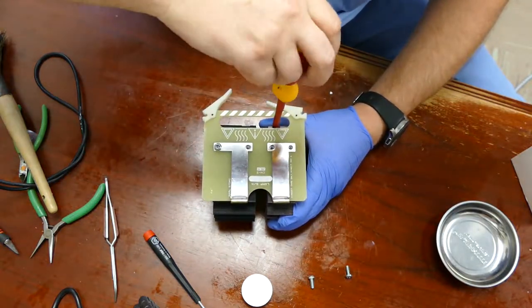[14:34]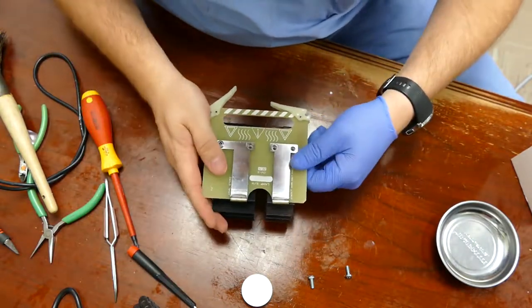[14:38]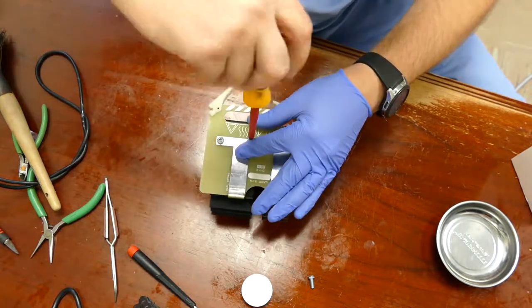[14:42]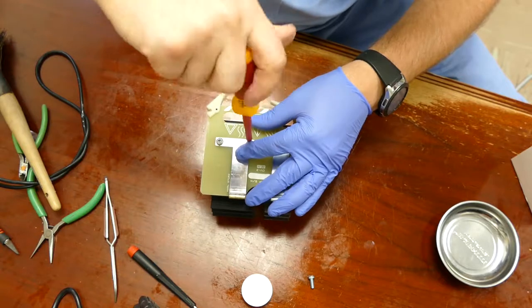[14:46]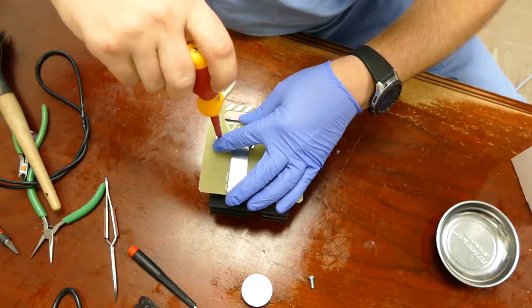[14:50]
Now it's time to install the card. Now here is where a lot of people run into problems. If you don't have these two heat sinks seated close enough together, your card will not mate up. And you can tell I'm almost off right there. So I'm going to loosen up the front heat sink, just leave it kind of loose. I'm going to put in my back two screws. Just kind of barely snug them down. That way I know my back heat sink isn't going to move.
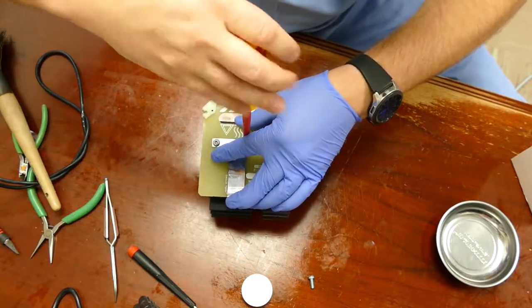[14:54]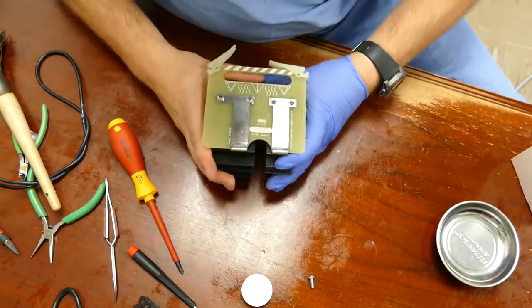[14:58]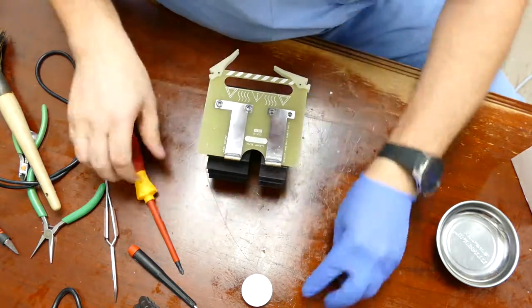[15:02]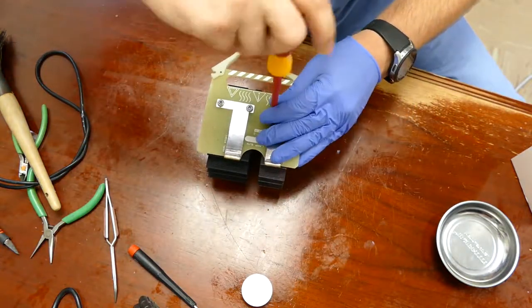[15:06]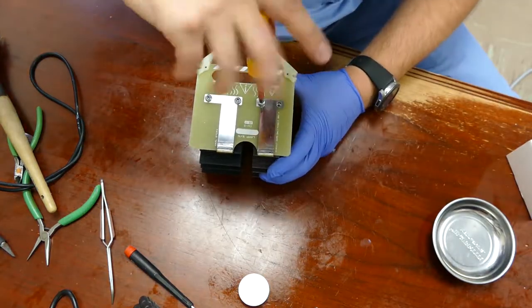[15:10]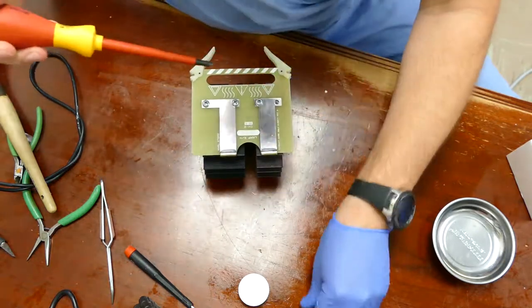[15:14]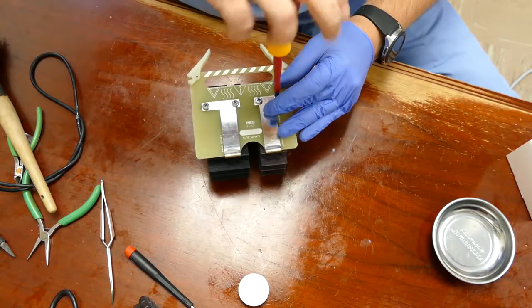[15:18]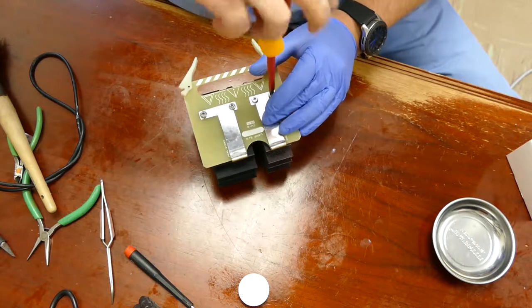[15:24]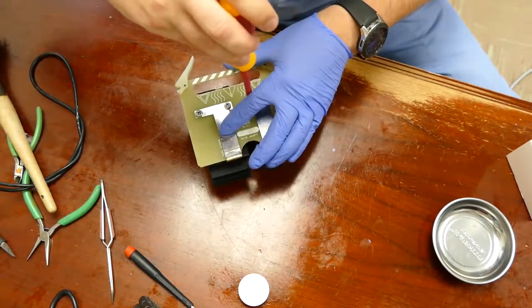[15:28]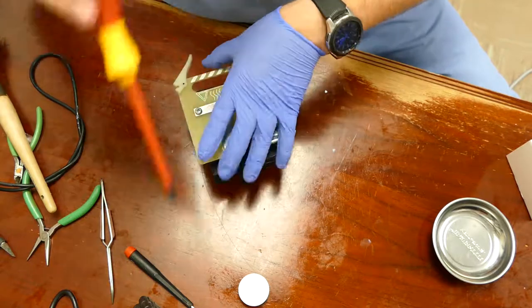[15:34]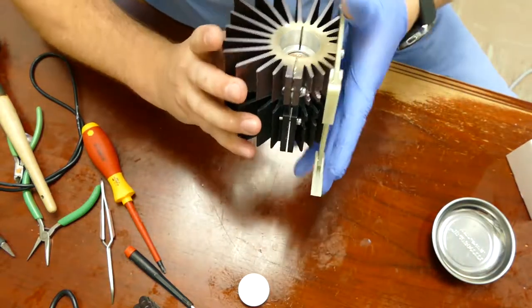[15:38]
Okay. And my front heat sink, it can still move around, and I'm just going to make sure that I press them in again, nice and tight. I can put my screws in. Check all the other screws for tension. Make sure that they're all tight. Everything's seated correctly. My heat sink is clean and there's no debris on the lens.
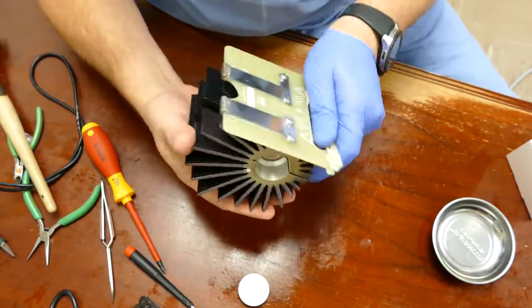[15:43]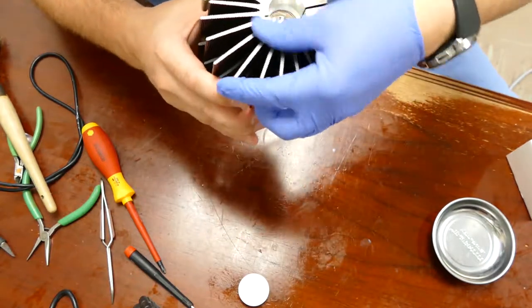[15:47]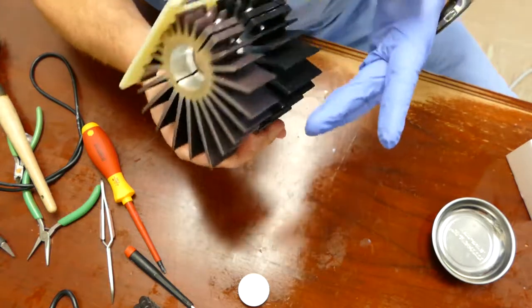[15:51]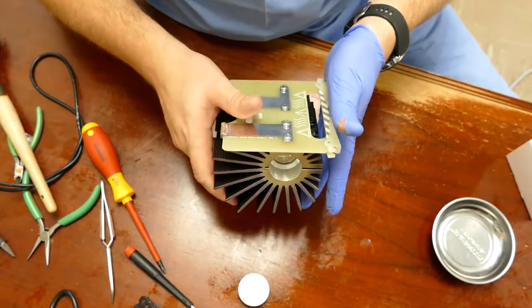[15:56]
All right, and that is a successfully rebuilt Karl Storz bulb. Got a little bit of compound there on the heat sink, so I clean that off. There we go, it's ready to install.
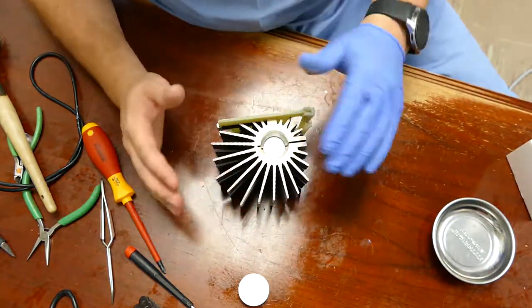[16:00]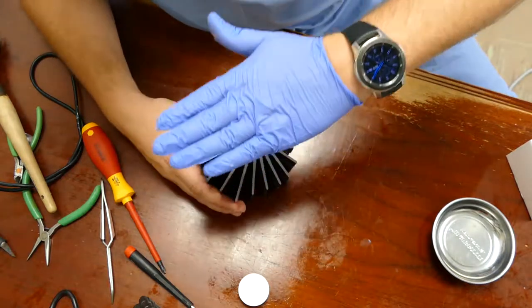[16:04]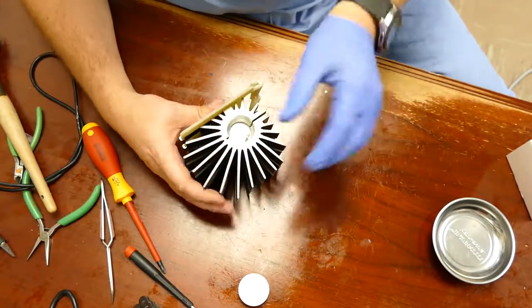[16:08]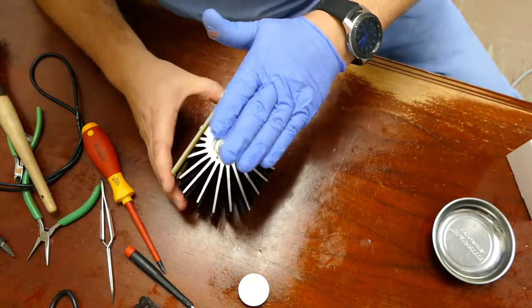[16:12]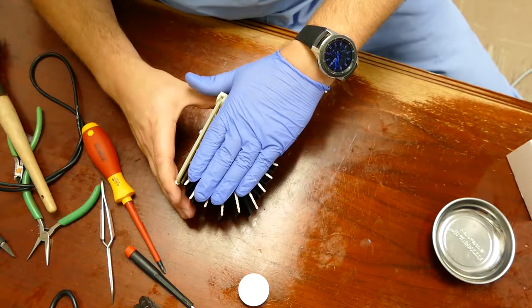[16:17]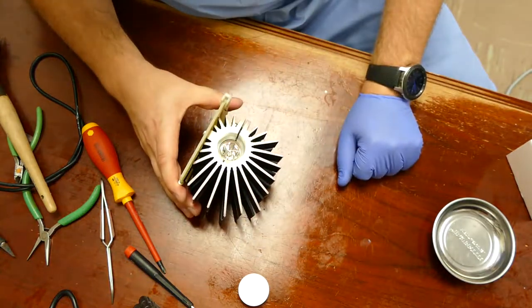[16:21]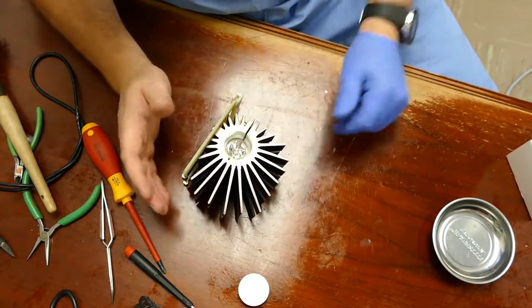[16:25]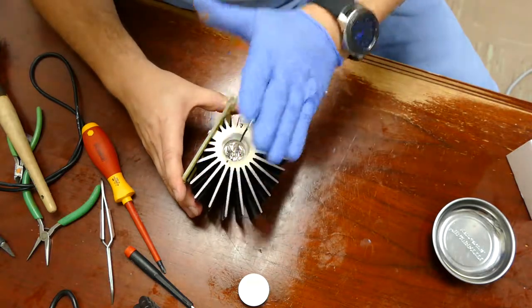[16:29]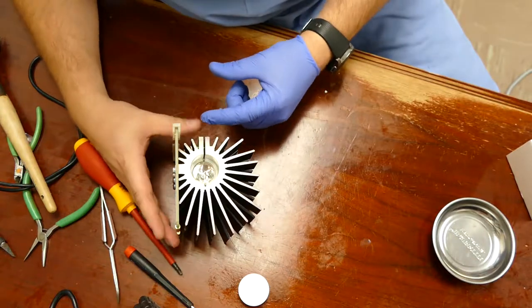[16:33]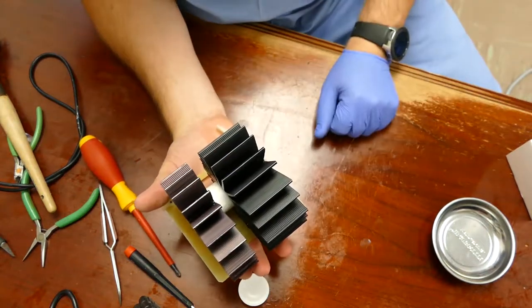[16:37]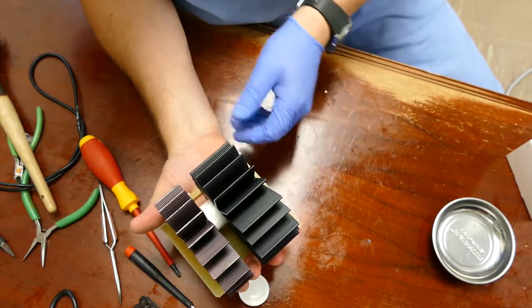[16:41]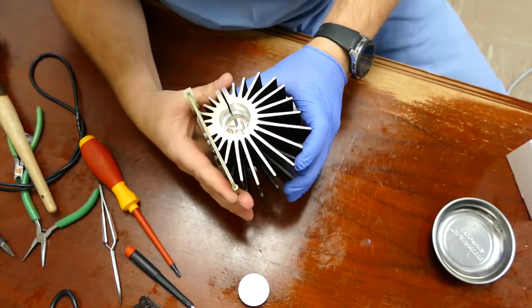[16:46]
Now, if you're going to put these in storage and you're just going to leave them rebuilt on a shelf, I highly suggest putting a large piece of packing tape and leave a flag off the side. Because before, when it was just me rebuilding these, I'd put tape over the entrance, and I've had a technician install that bulb into a unit and it caused a little burn hole in the plastic. Created a little bit of a situation because he forgot to take the tape off. So now I put tape across the whole heat sink and I leave a nice 3 or 4 inch flag off the side, and that will go on the shelf as a bulb rebuilt ready to install. So when they go to install it, they see the flag, they pull the tape off and pop the bulb in, you're good to go.
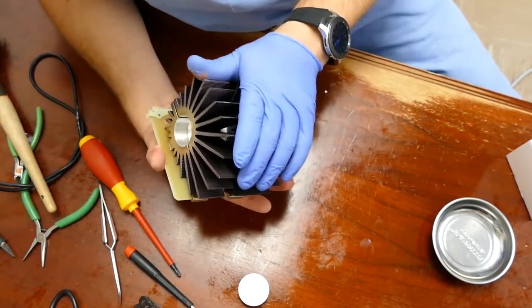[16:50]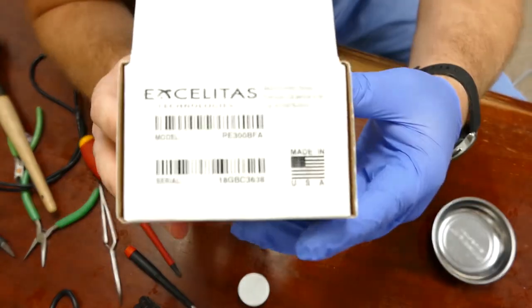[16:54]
But that's how you rebuild the Karl Storz Xenon bulb, 300 watt, the part number right there, Excelitas PE300BFA.